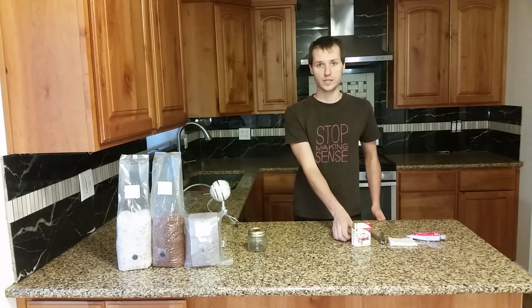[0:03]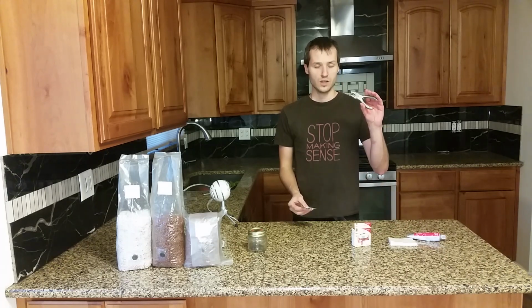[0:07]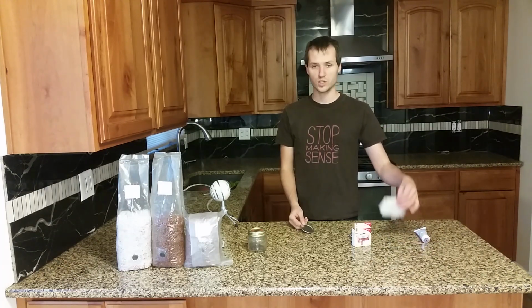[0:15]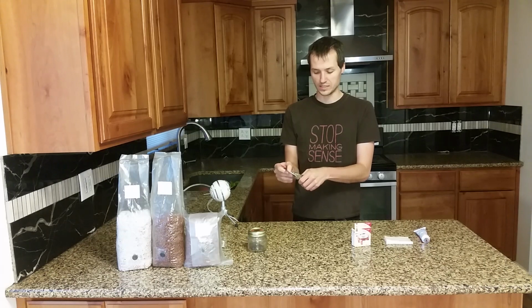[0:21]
Here's the easiest way to prepare liquid culture lids. All you need is a paper punch, a metal canning lid, RTV red high temperature gasket maker, and a wet paper towel. Poke holes in the metal canning lid with the paper punch.
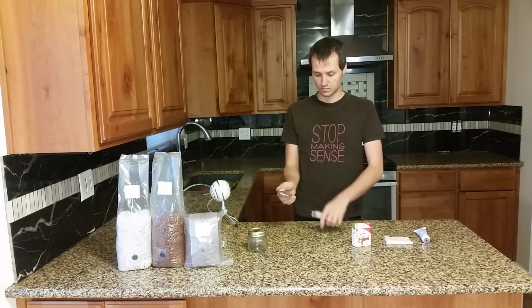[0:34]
It's a lot easier than drilling, though it's still kind of difficult. So it looks like that.
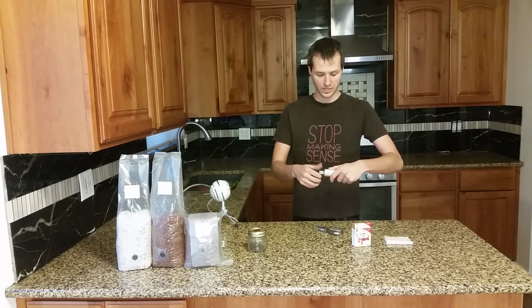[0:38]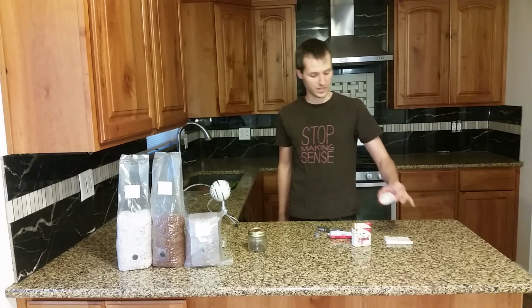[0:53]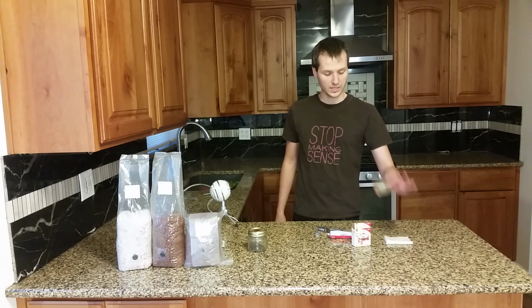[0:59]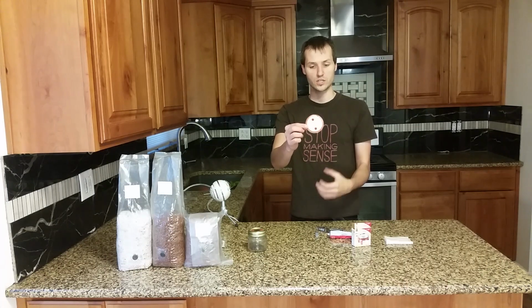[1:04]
Then, take your RTV silicone and carefully put just a little dab on the top. And then it'll come through both sides. Simply press it down using the wet paper towel and allow it to sit at room temperature for a day or two while it cures.
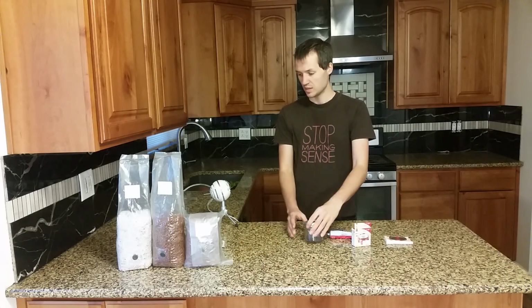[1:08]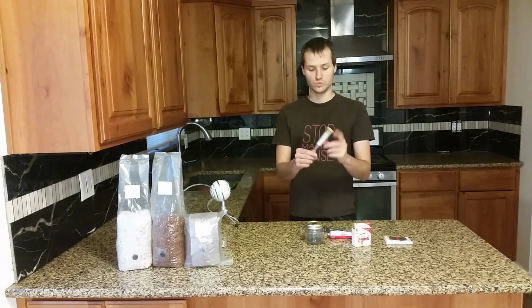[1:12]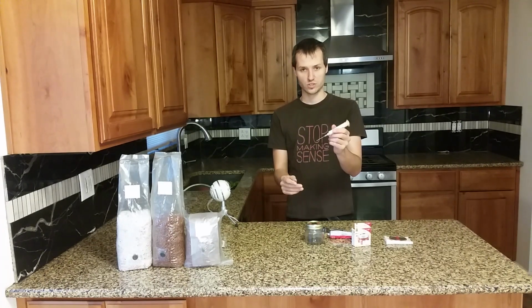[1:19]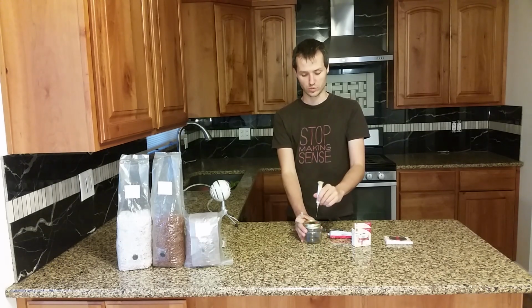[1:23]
Once you're finished, it should look something like this. To add the filter, all you have to do is take a used syringe and compress it full of polyfill and attach the needle. This should be sterilized before adding to your sterilized liquid culture.
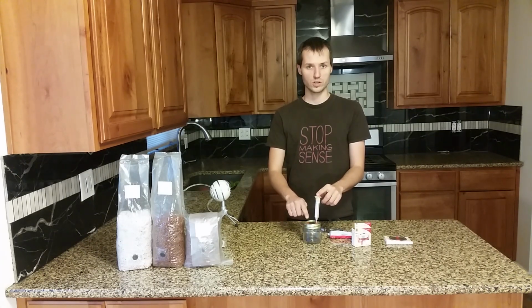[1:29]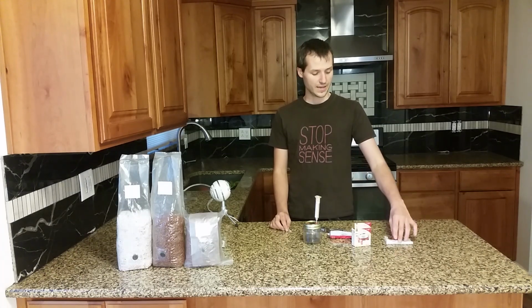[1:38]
You add it, the pressure will equalize, and then you can inject your spore solution or liquid culture solution in the other injection port. That's all there is to it. It's very easy, much easier and much safer than trying to drill holes in the lid, and it looks better than pretty much any other solution. That's all there is to it.